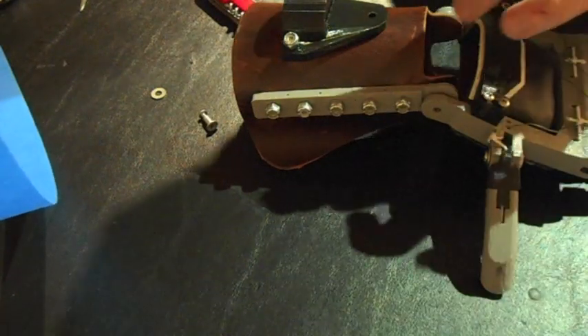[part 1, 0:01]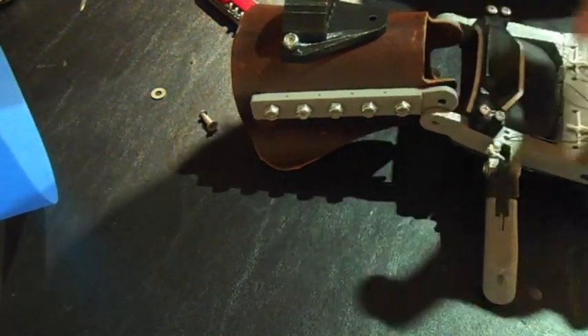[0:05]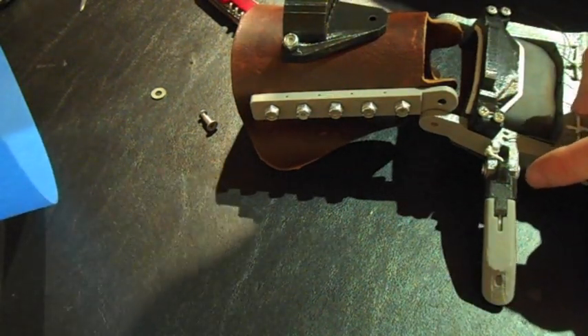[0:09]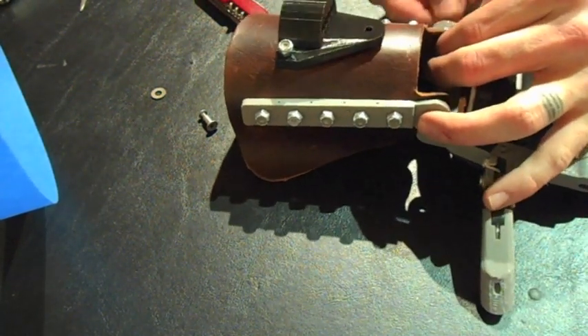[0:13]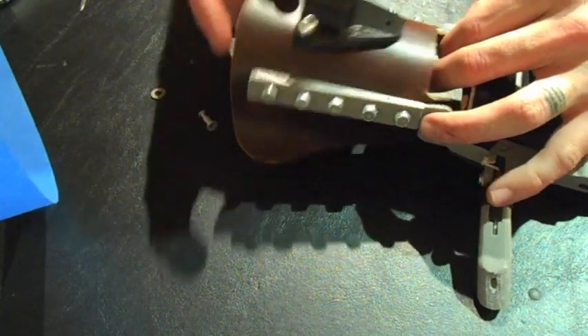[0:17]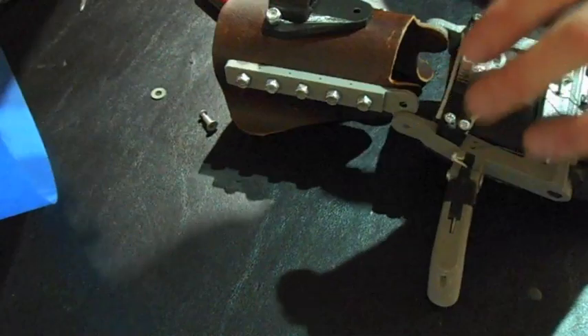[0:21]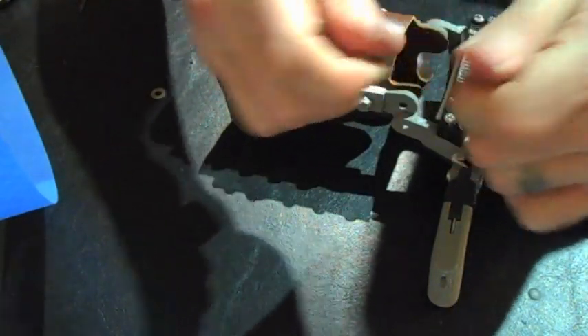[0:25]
So if you're unable to find screws that are long enough, they're just a little shorter, just like I showed you with the thumb, you'll want to use a little bit of removable Loctite. Instead of tightening the hinge all the way down, you'll just put on the Loctite there and then tighten it down to the point where it doesn't cause any impedance in the hinge action. And now we're just going to repeat the same thing with this side.
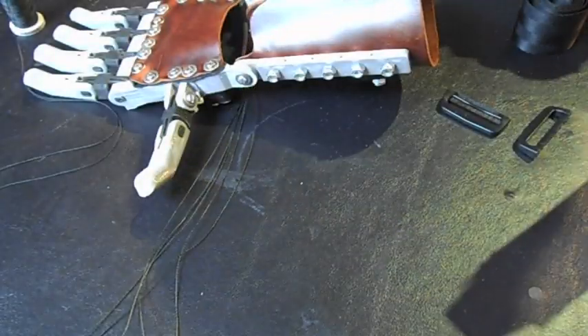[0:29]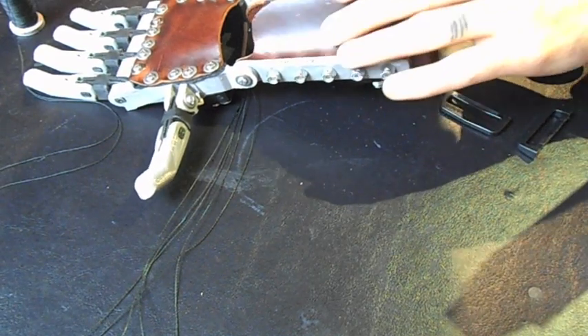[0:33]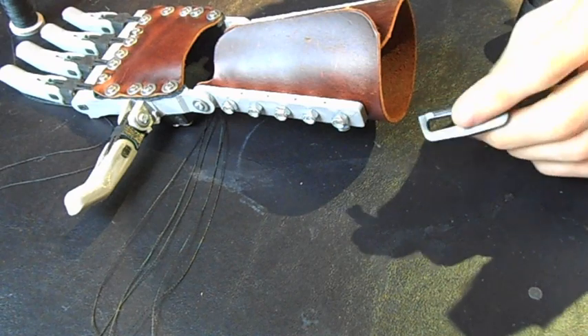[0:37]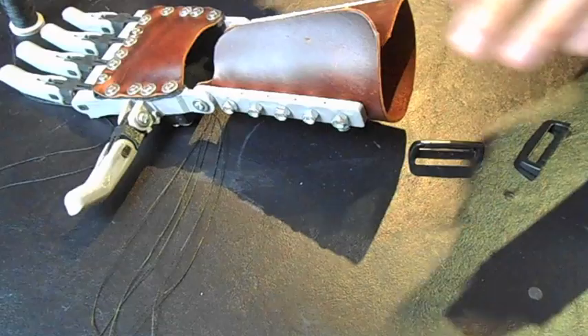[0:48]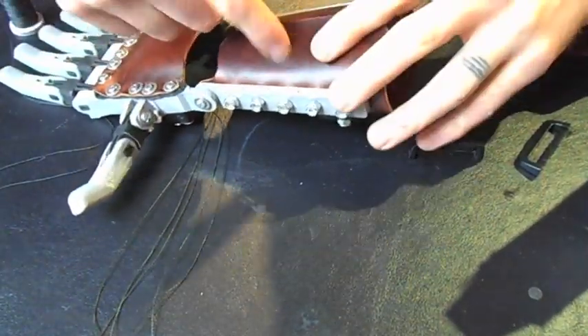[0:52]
Alright, so moving on next to creating the closure system. I have a couple of these plastic brackets. They're used for nylon strapping. So that'll be one side. These are going to be held to the side of the frame with the shorter flap of leather.
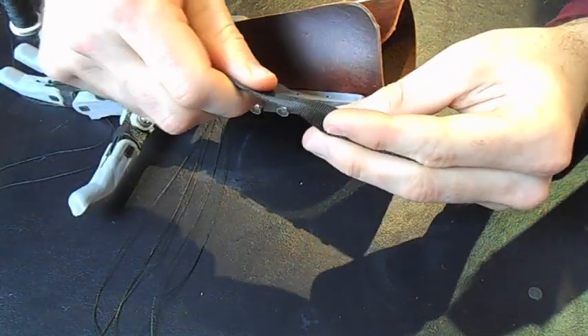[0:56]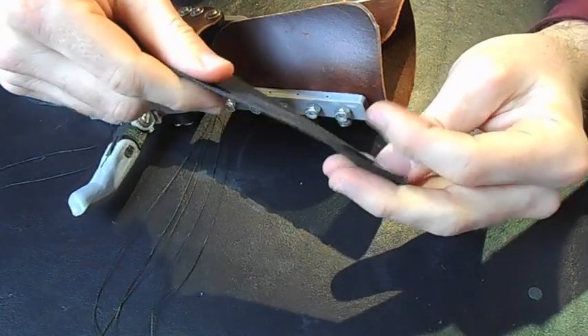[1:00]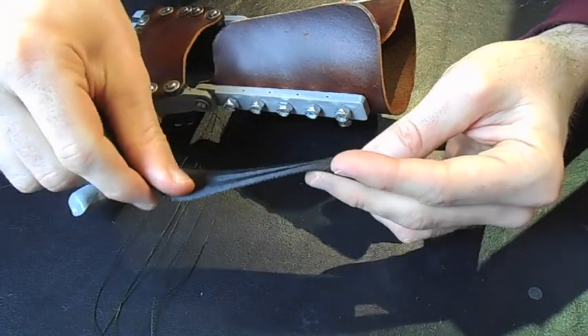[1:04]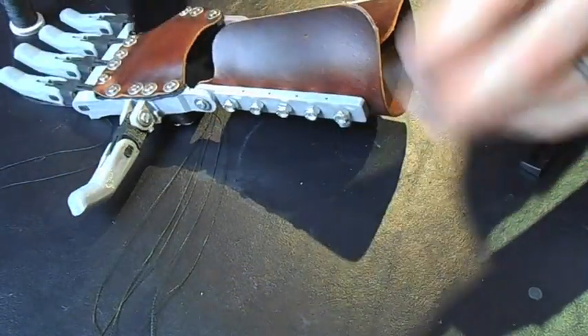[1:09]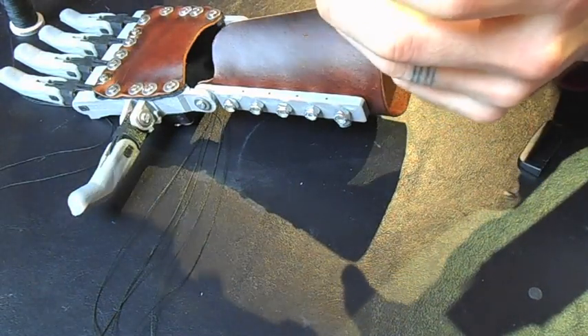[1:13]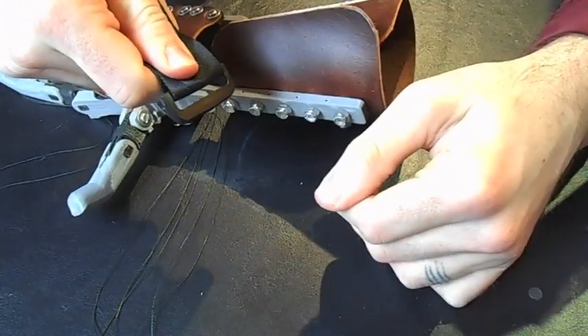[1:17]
They're going to be held there by this material, which is nylon strapping. It's very similar to the material that seatbelts are made out of. I found this at my local hardware store. This could also be found at a fabric store, maybe Joann's or something equivalent to that. And as you can see, that fits through there, and it'll anchor it to this side.
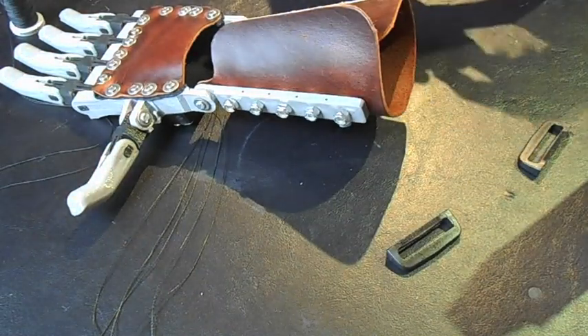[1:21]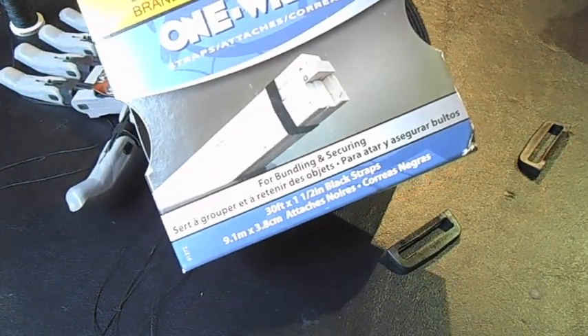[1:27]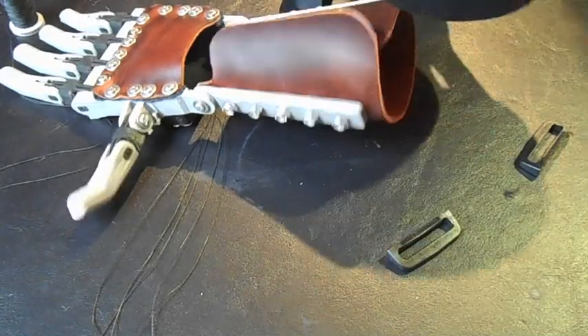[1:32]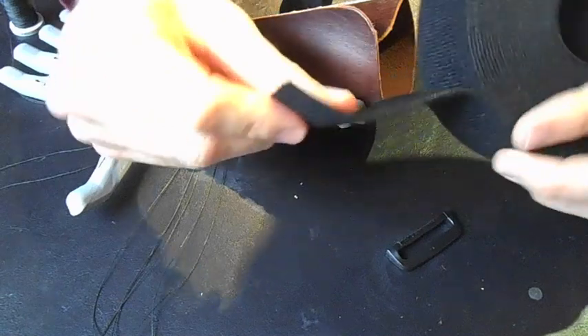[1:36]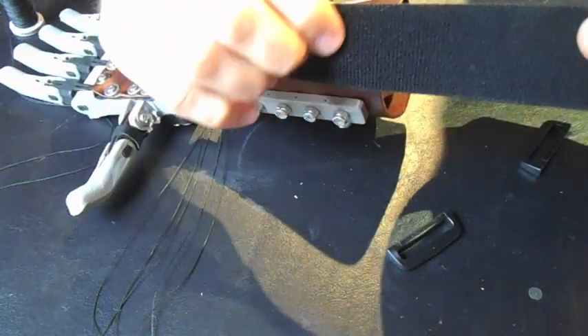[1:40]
Also, for the other side, for the Velcro, I'm going to use this product called One Wrap. I found this at Lowe's. It's a 1.5 inch width, and it's very strong, sturdy Velcro. And what I like about this is that it has the hooks on one side and the loops of the Velcro on the other.
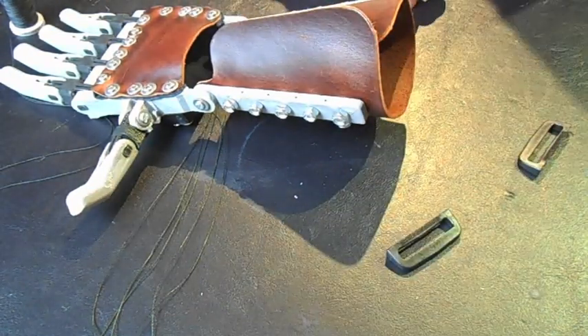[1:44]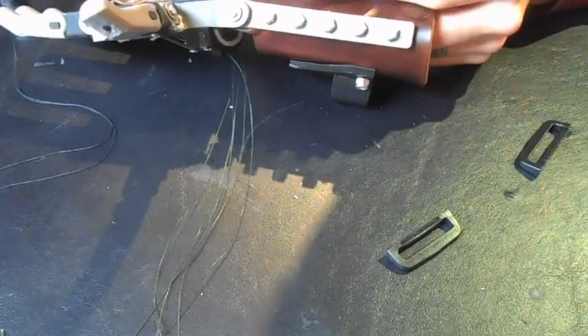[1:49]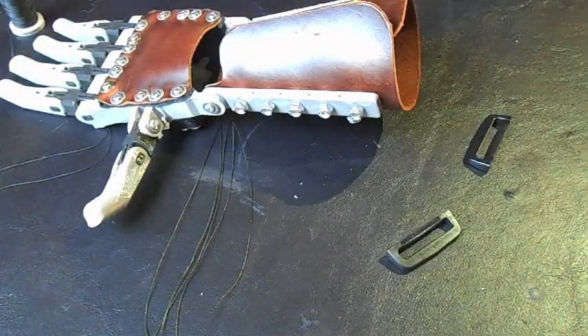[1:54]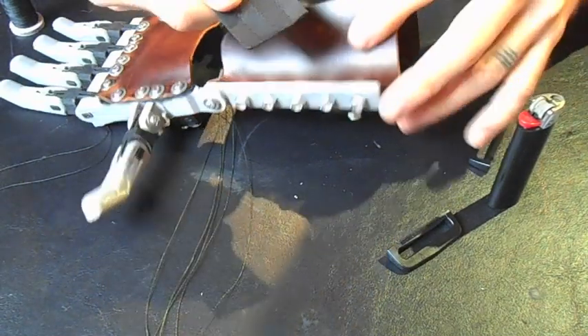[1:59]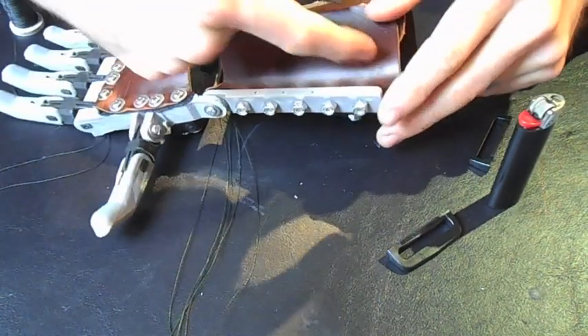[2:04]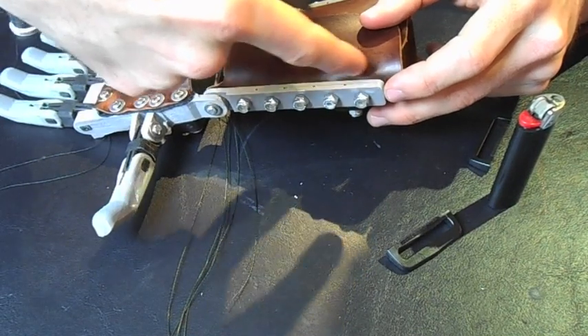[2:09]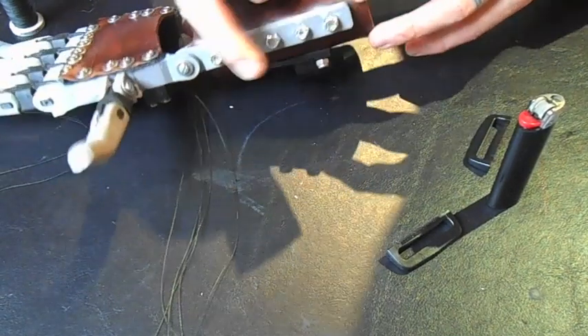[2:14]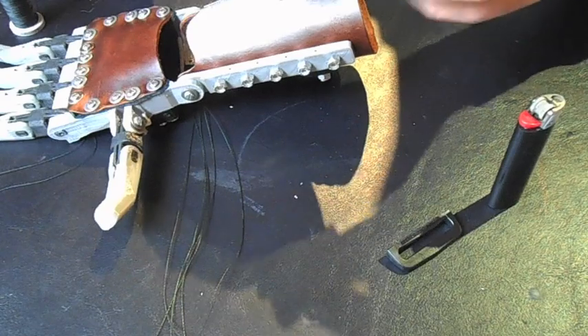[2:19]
So what we're going to do is punch holes in the material, use a lighter to melt those holes and prevent any fraying from occurring, and then anchor the strap in between the forearm bar and the leather. So we're going to punch holes in it to correspond to the bolts. The first thing that we'll want to do is loop this through here
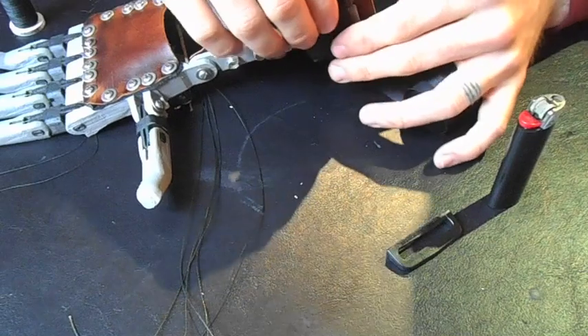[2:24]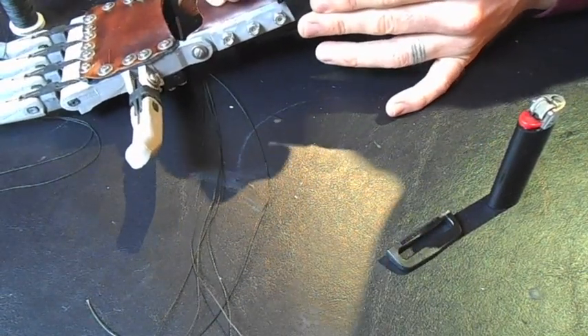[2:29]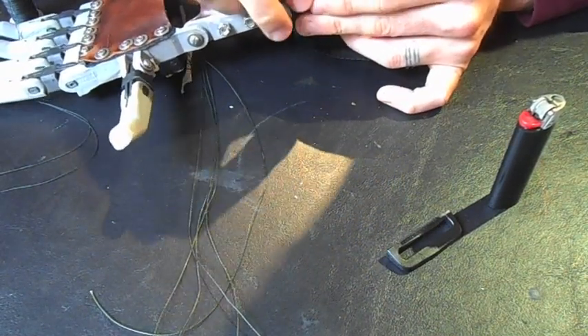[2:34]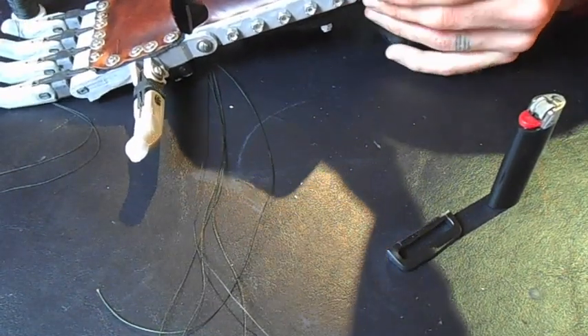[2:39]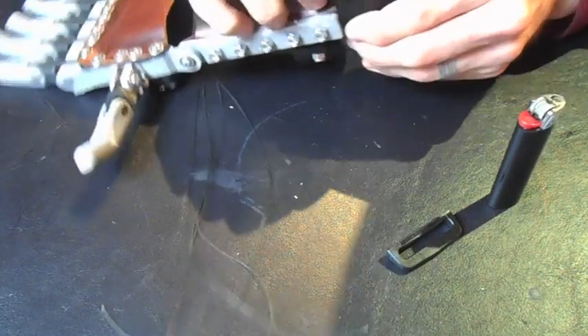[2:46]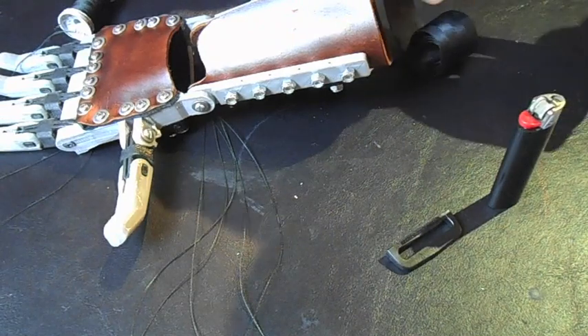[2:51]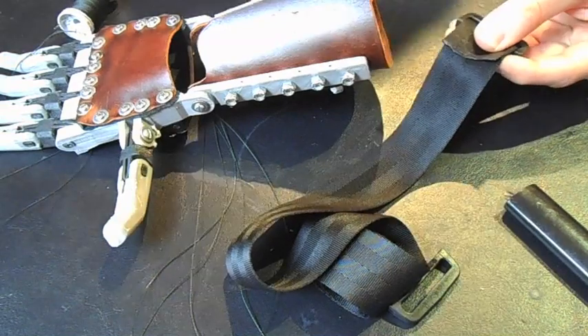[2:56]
And measure this out so that with it through the holes, we want it to hang out so that it can flex back and forth like that, so it's not right up against the frame. I can hold this off to the side to get a better sense of how close to the frame it'll be. Okay, maybe a little tighter there. Alright, so just about like that, and then what I'll do is take a sharp pair of scissors and cut right along there.
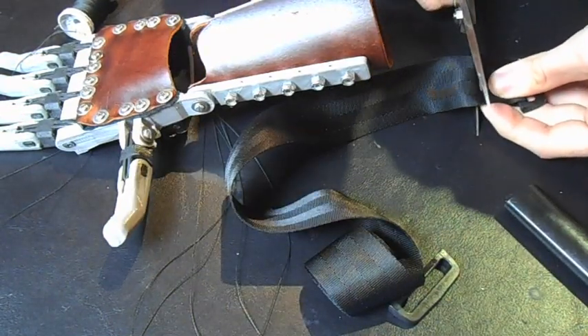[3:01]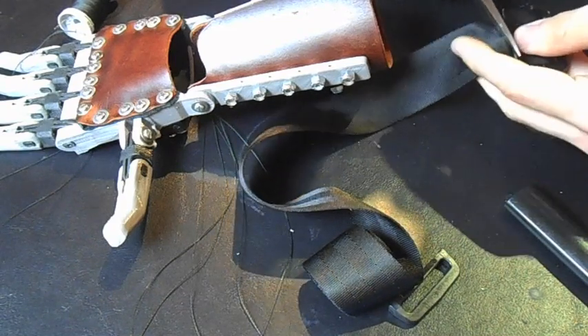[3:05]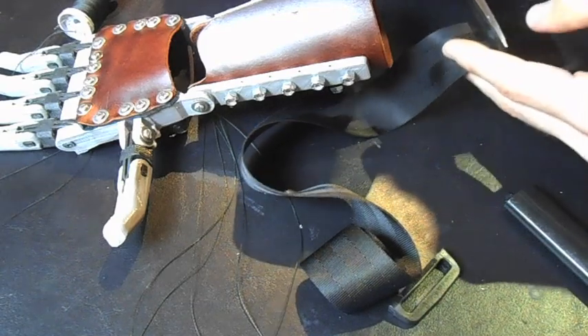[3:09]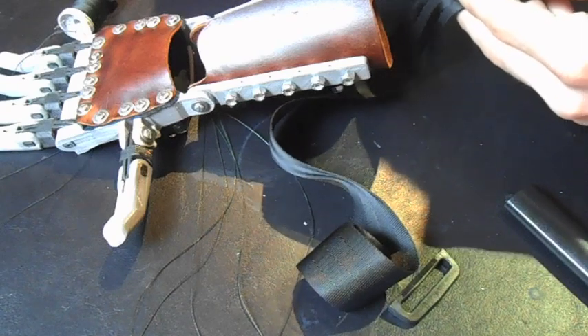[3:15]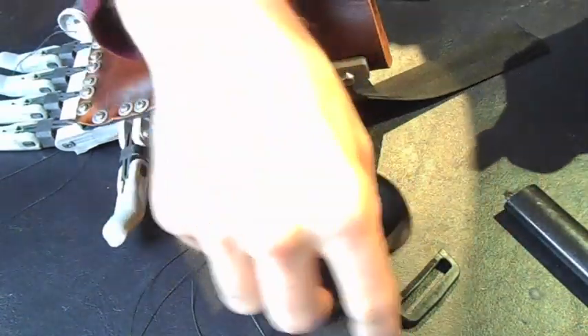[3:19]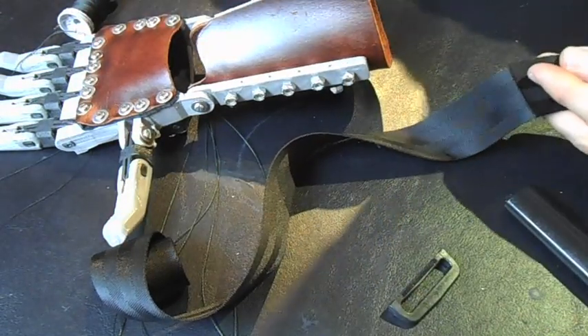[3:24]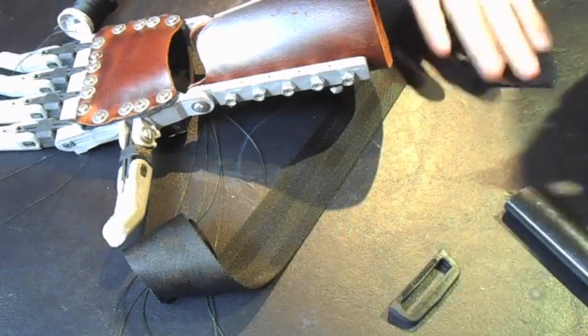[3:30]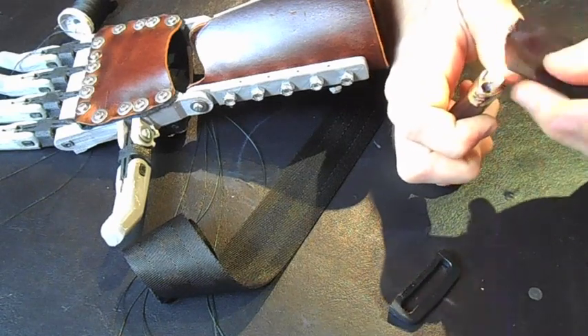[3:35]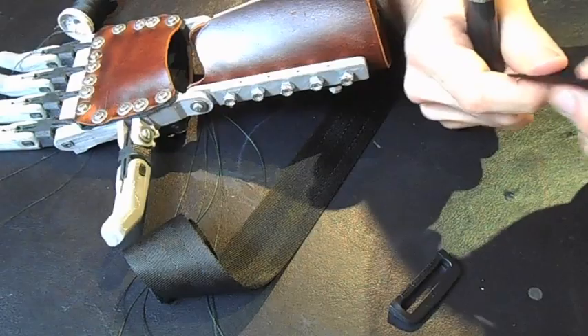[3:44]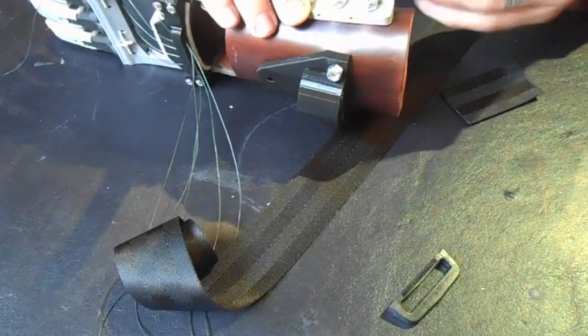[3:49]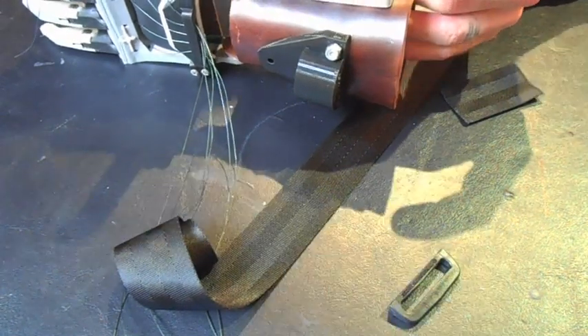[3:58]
So the length for the other bracket is going to be the same, so we can use our first piece to measure out our second one. Okay. Now that we have these cut, take a lighter and singe and melt the ends so that it'll fuse everything together and keep it from fraying. There we go. And then we can measure and punch the holes
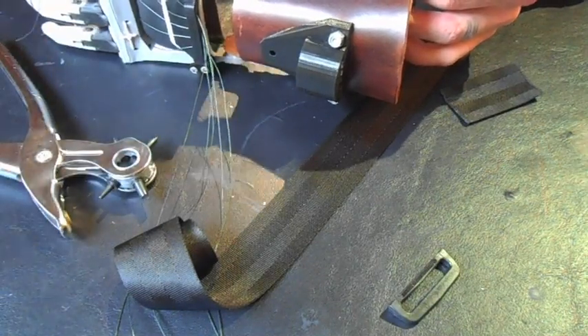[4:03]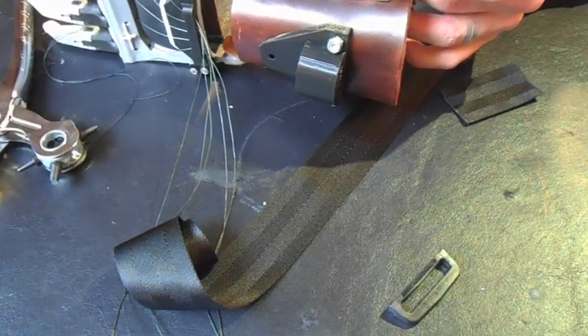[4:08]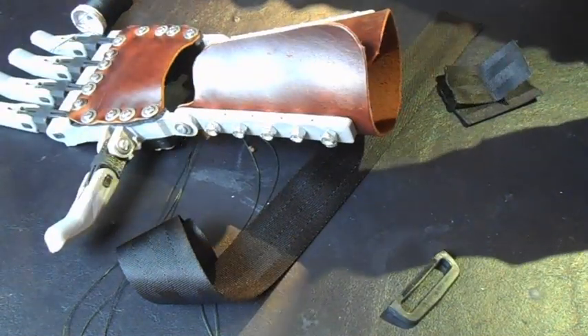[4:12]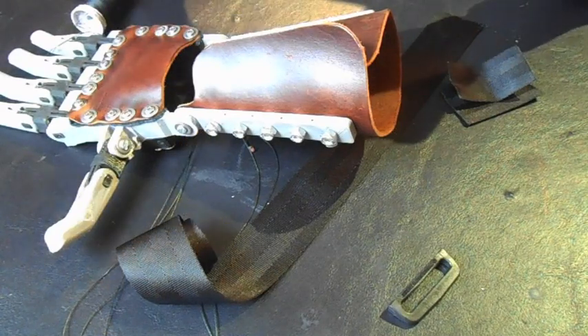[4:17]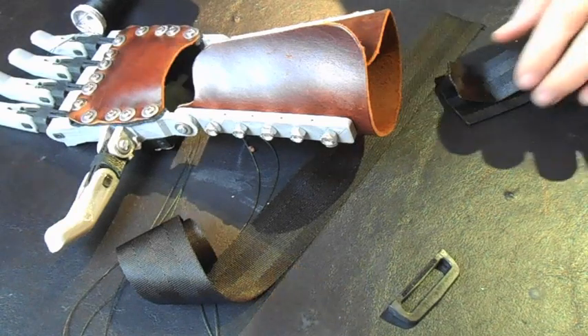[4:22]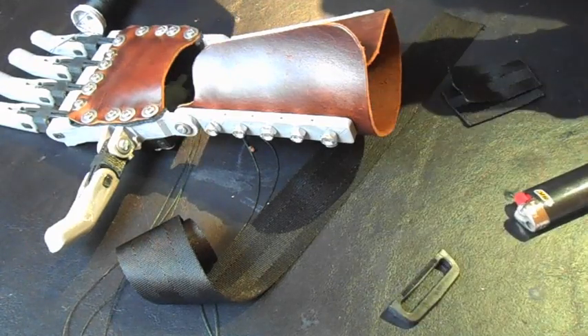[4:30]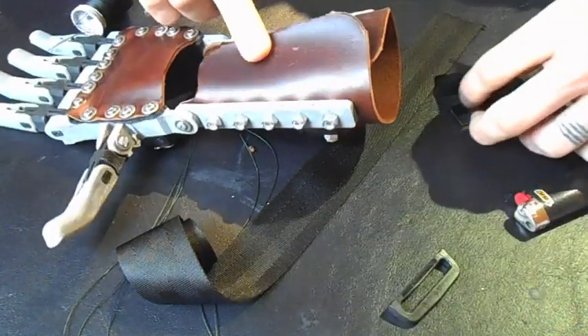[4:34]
for the points at which it's going to mount to the bar. And this is actually going to require the punch that I removed from the rotary punch earlier. So let's push that back in. There we go. Switch to it. Okay. So you want a hole that's a little bit smaller than the size of your bolt, because the hole will expand a little when you melt it, and that also helps to reduce the chance of fraying.
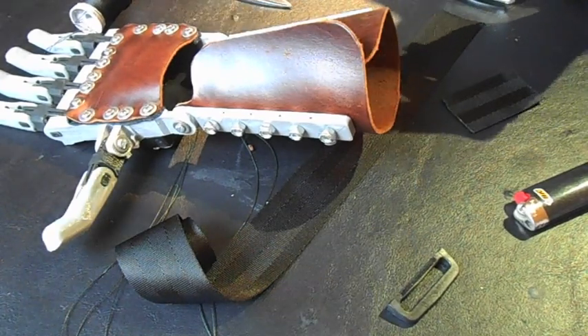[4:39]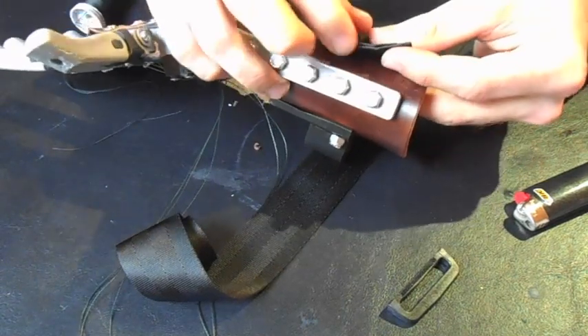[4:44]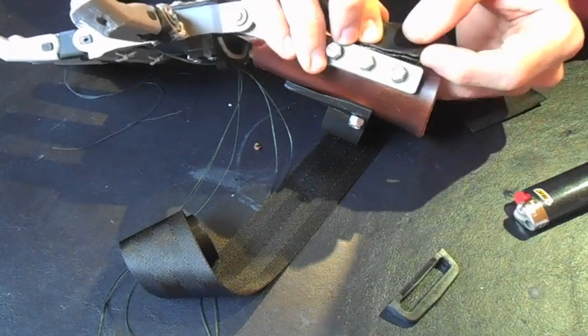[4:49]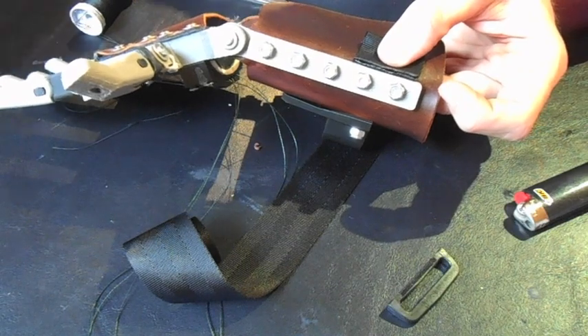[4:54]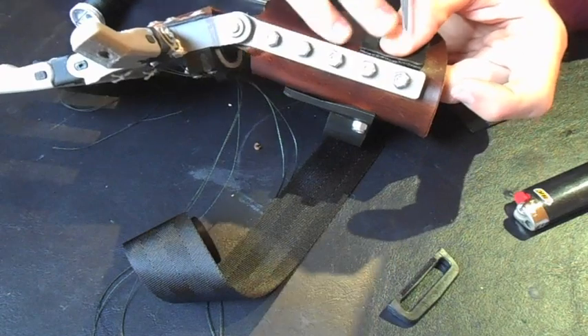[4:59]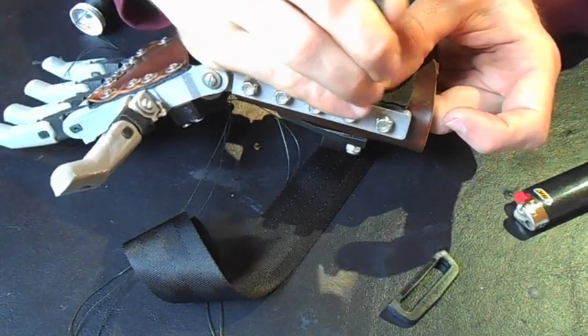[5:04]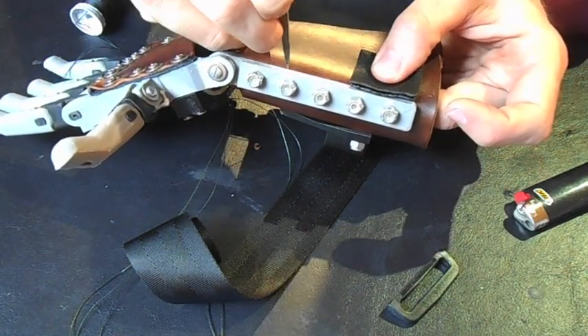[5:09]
Marking these can be a little tricky because Sharpie and other markers don't show up well. If you have a silver colored felt pen, like a fabric pen, that works really well. The other thing that you can do to mark this is just use something sharp to poke a hole in it at the center of where you want it to be. What I'm doing here is lining the holes up with the center points of these bolts. Actually, I'm going to shift this over a little bit because we're going to need these to be slightly off on this one.
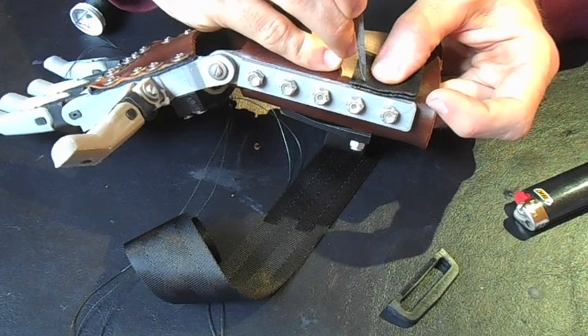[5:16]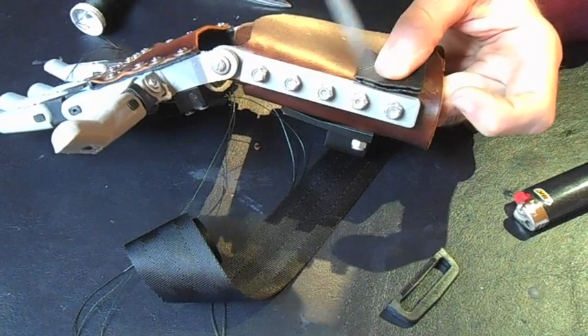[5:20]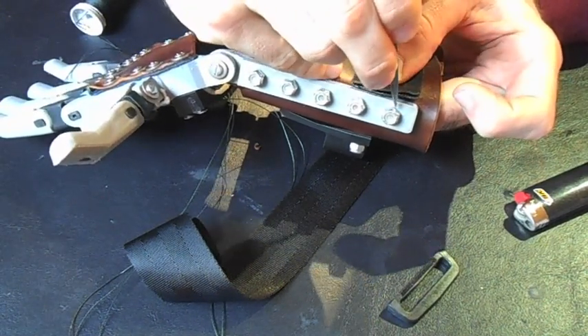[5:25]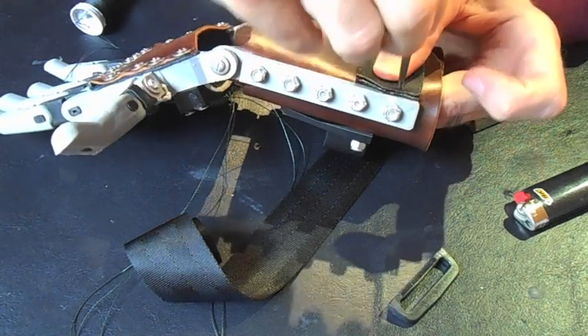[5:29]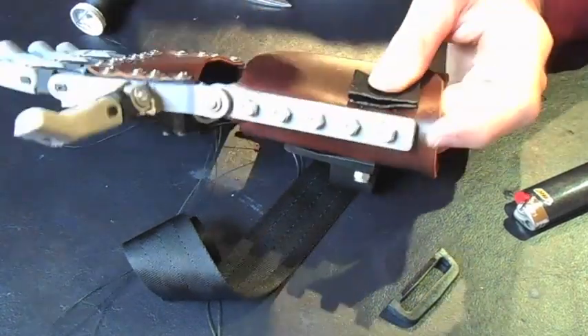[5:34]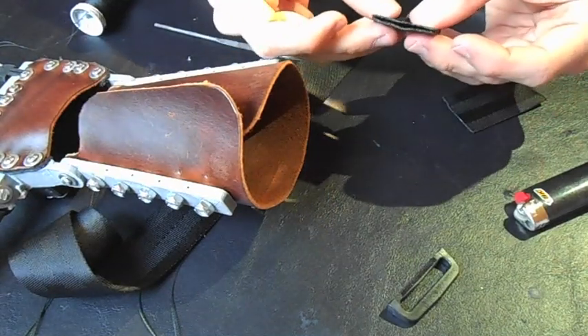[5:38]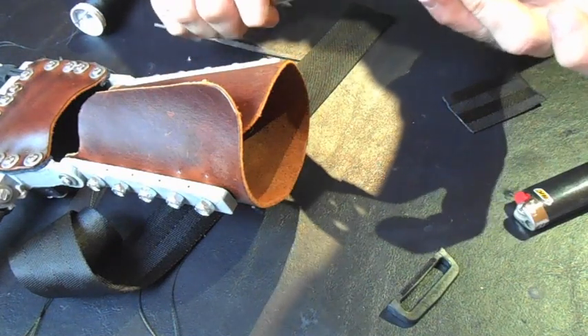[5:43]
Okay, so we're just going to go down to about here, and create a dent in the material. That one. Okay, so I don't know if you can see it on the camera there, but there's 2 dents in it now. And that's what I'll use. I'll just keep it folded in half, that way I end up with holes that are lined up with each other perfectly.
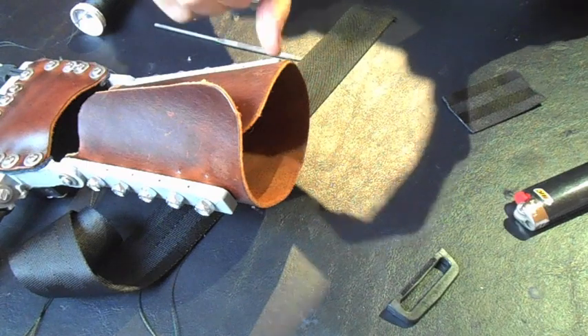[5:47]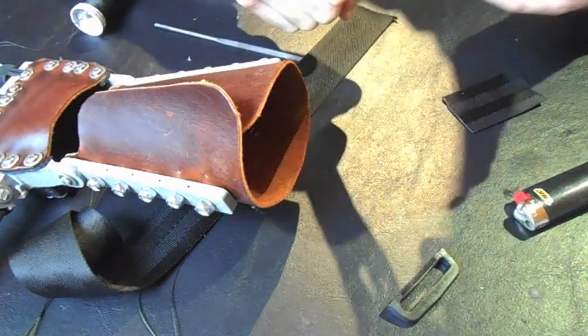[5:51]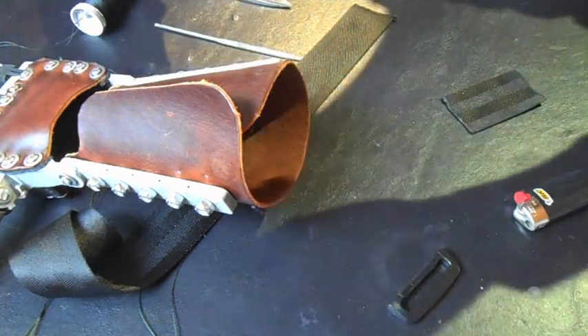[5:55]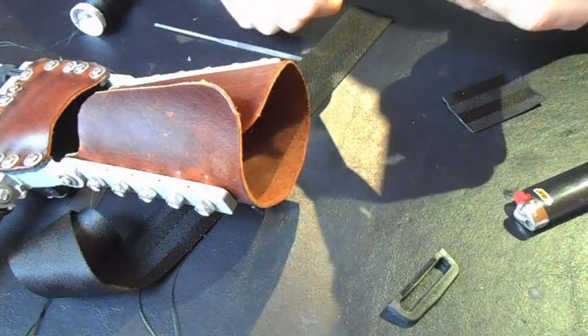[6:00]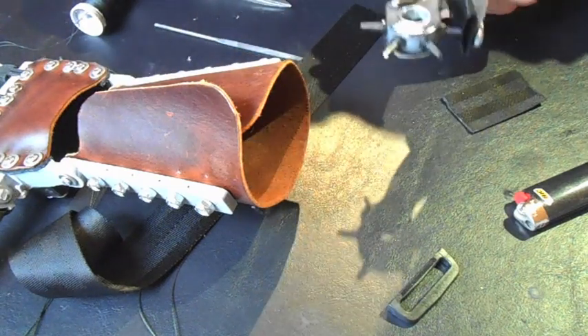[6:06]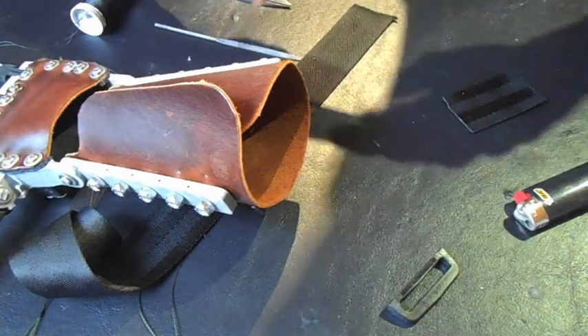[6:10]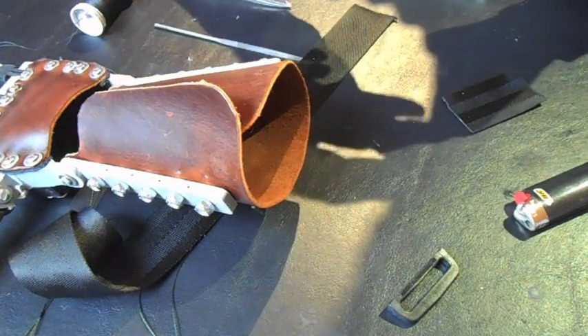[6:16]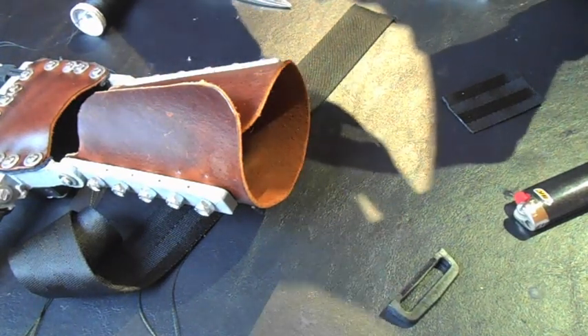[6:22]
And a really firm squeeze until you hear a snap, and then a twist to cut the fibers as well. Okay. Same thing on this side. Really firm squeeze until you hear that snap sound, and then give it a twist, which will cut the fibers. Okay. Alright, so we've got our holes through there. Now this is where we can clean them up with the lighter. Sorry, we want to melt. We want to prevent fraying.
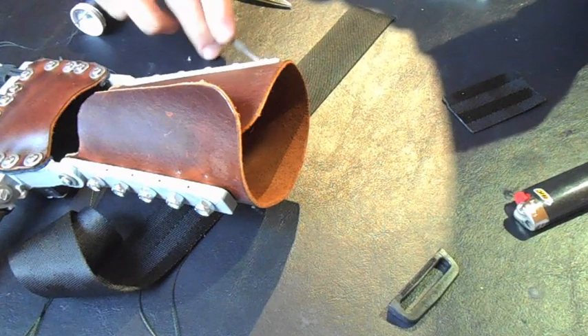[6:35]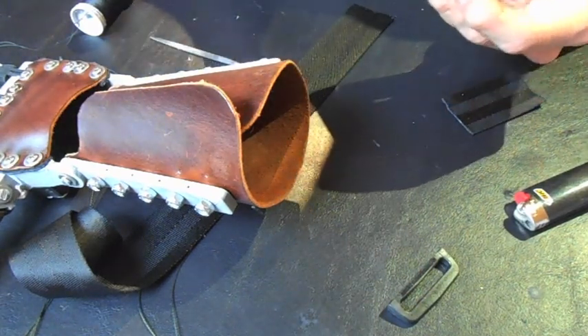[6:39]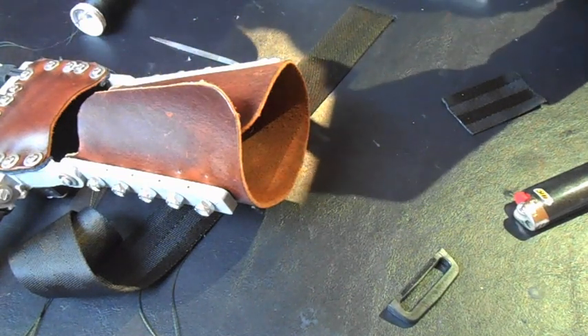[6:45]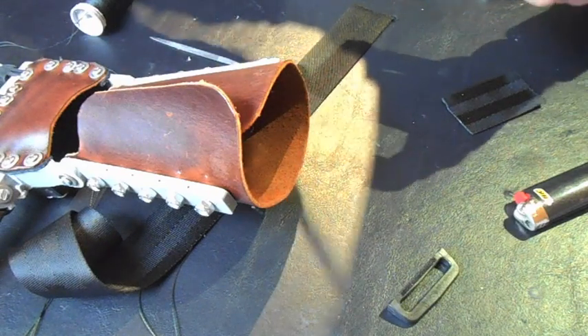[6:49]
Okay. As you can see, my punch is not as sharp as it was when I first purchased it, so I'm going to have to go back through here with some scissors and cut the excess. Okay. There we go.
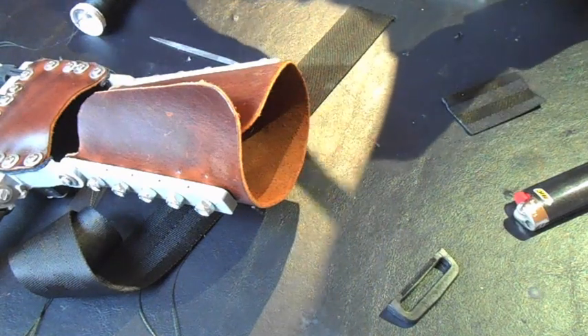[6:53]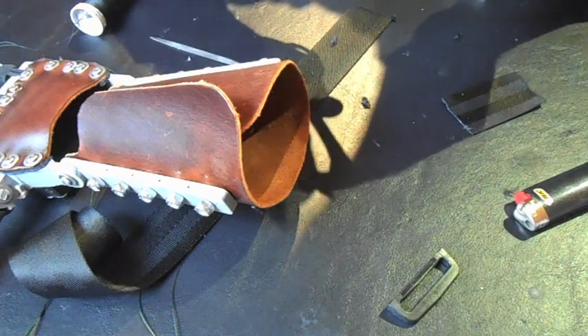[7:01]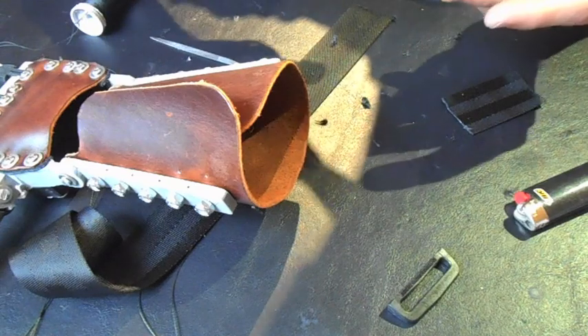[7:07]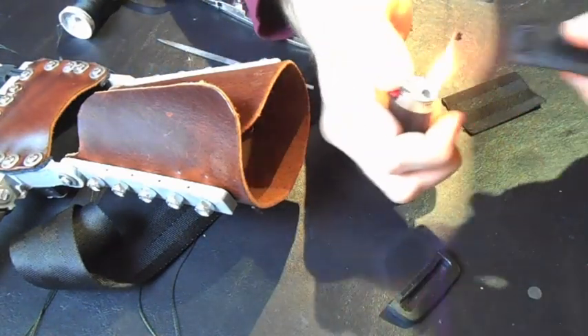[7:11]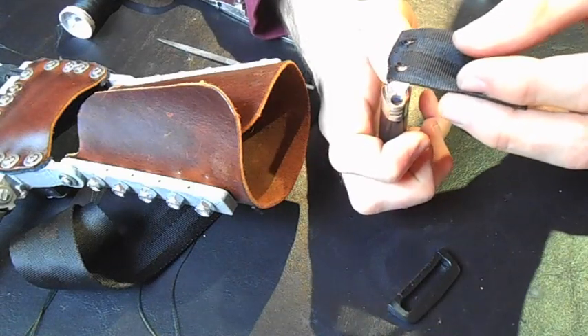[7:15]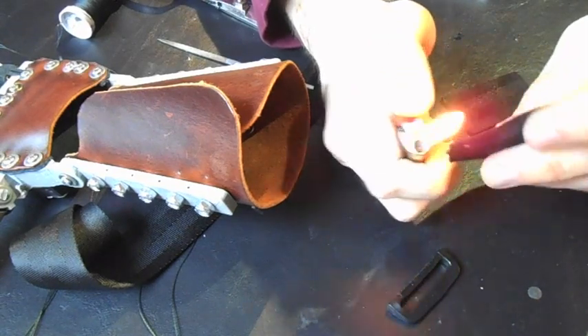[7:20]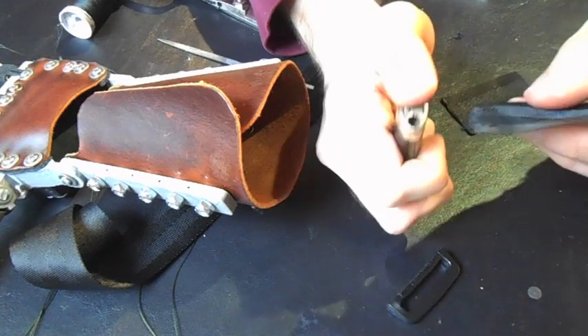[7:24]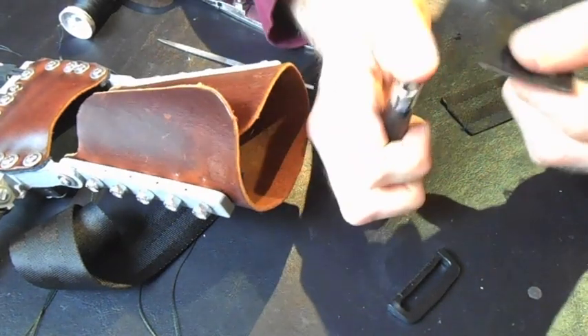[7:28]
So the little flaps that are sticking up from where it punched through but didn't cut completely. Alright, and so when melting the holes, you just want to have the tip of your flame basically go through. There we go. And you just hit it with the flame briefly from both sides. That way the heat's passing up through the center of the hole and fusing together all the fibers inside the hole.
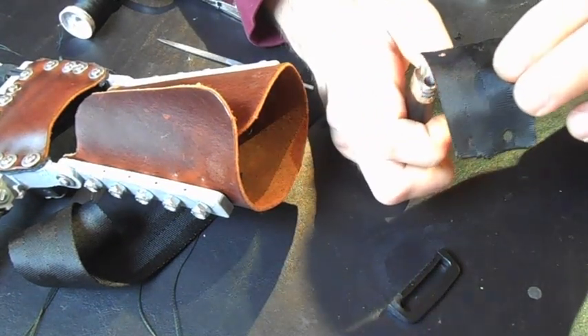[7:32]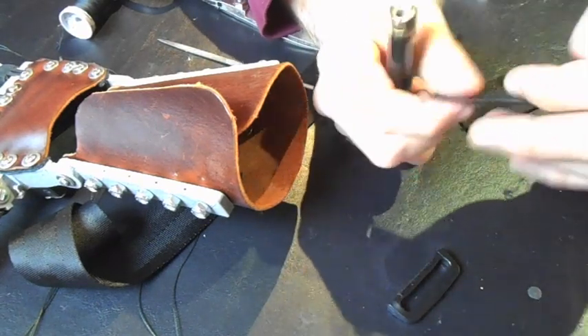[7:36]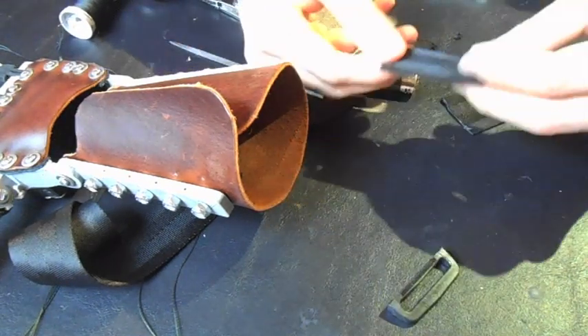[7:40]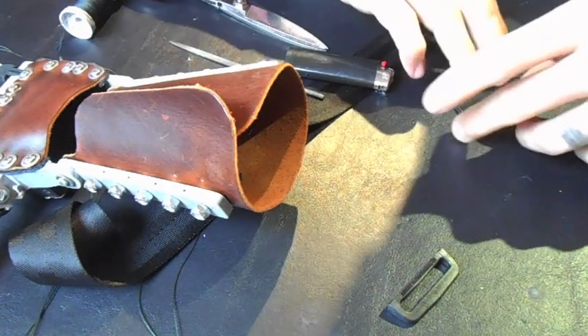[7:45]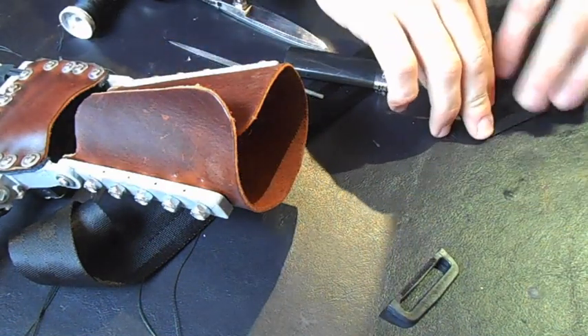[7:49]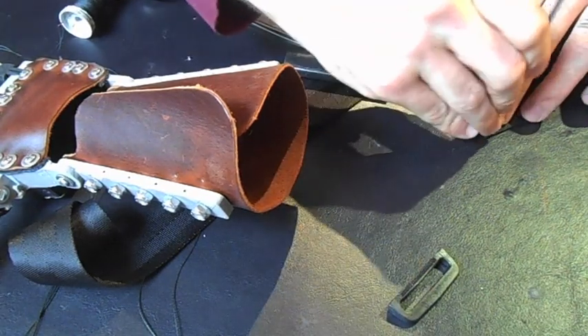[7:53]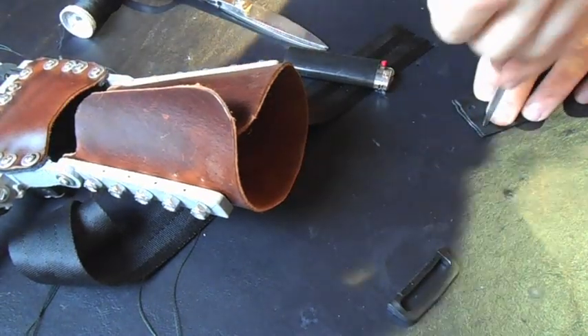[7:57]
There we go. Got my thumb a little bit there. Alright. There. So now we've got our holes cleaned up. And then what you can do is you can just take and mirror those holes onto the next piece of material. And I'll do the same sort of deal here with...
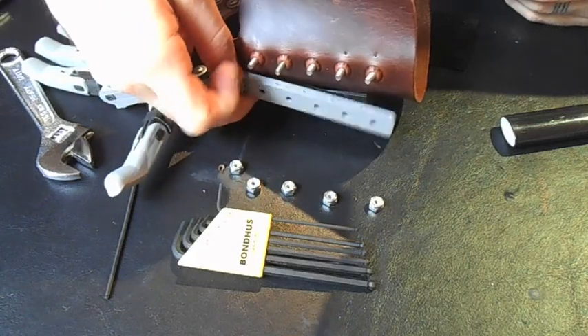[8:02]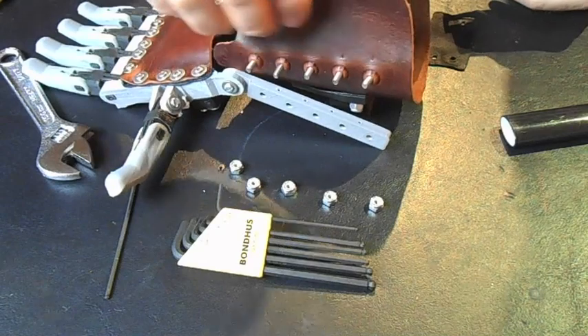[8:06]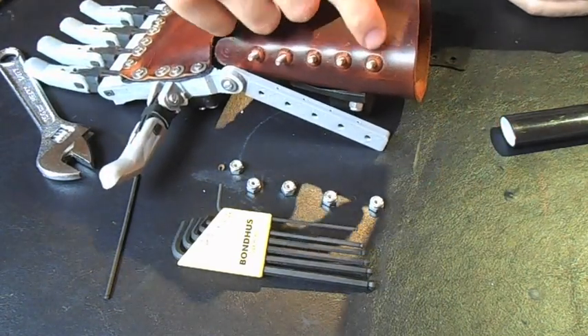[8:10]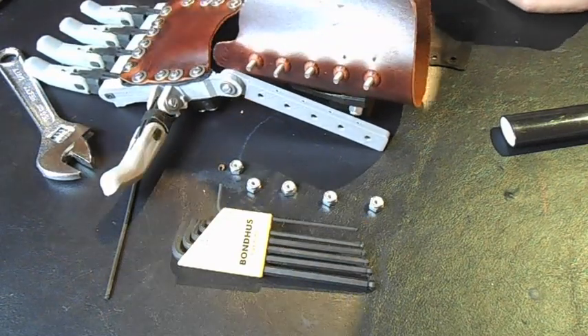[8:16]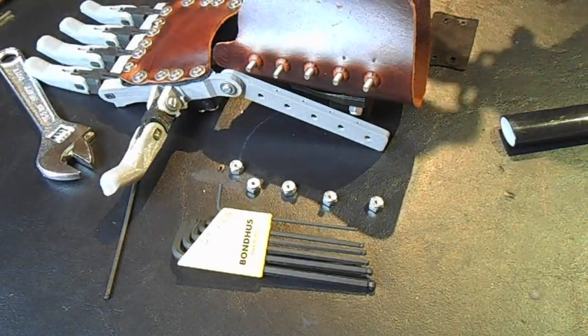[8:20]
Okay, so now I've removed the lock nuts and detached this side of the forearm. You can see that, looking here, you can see how the leather's been pulled up into the wells of the forearm bar, so this is a really good example of how that works out.
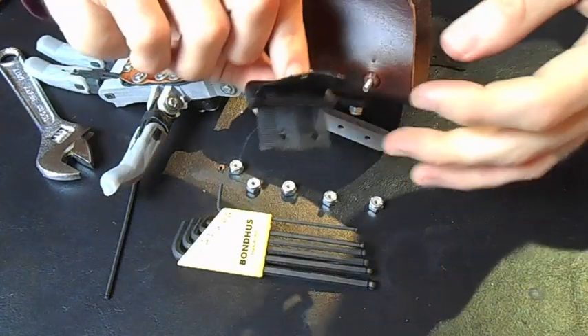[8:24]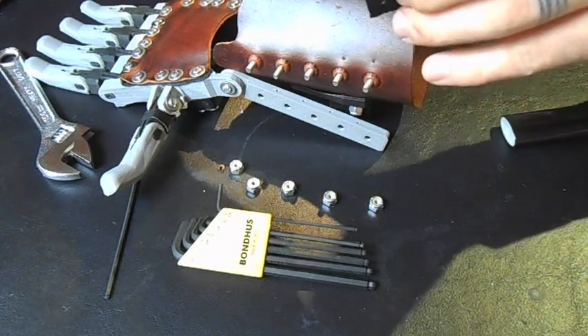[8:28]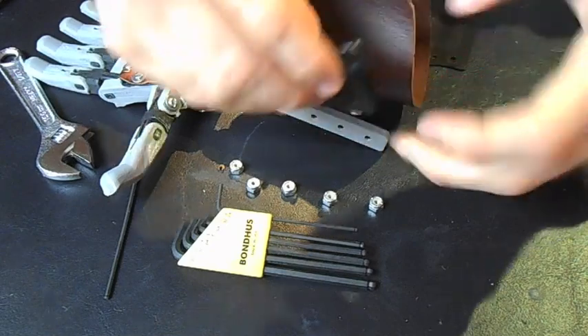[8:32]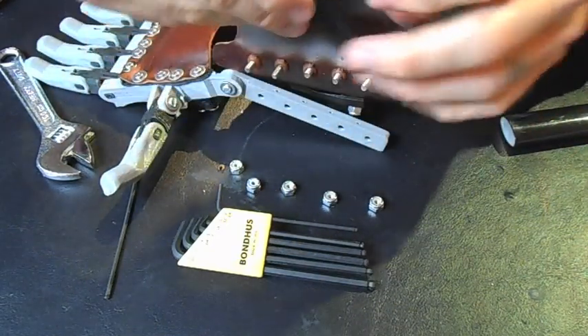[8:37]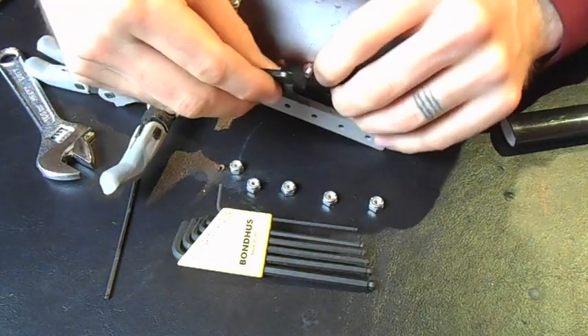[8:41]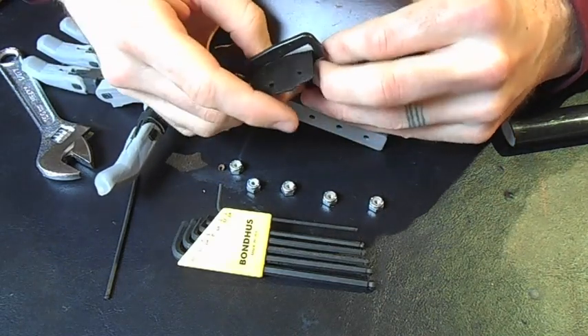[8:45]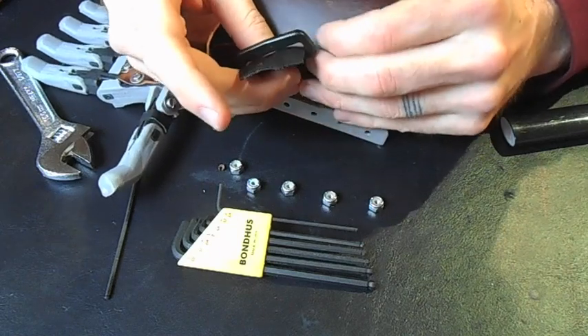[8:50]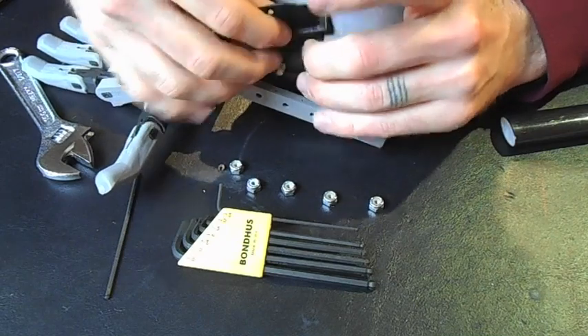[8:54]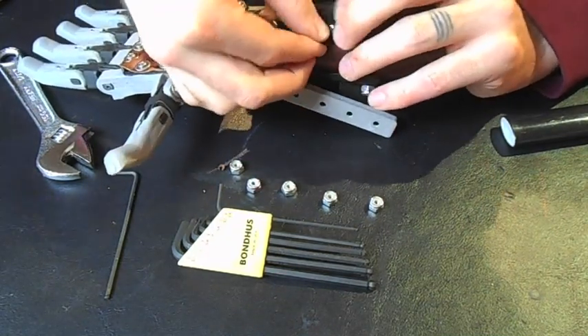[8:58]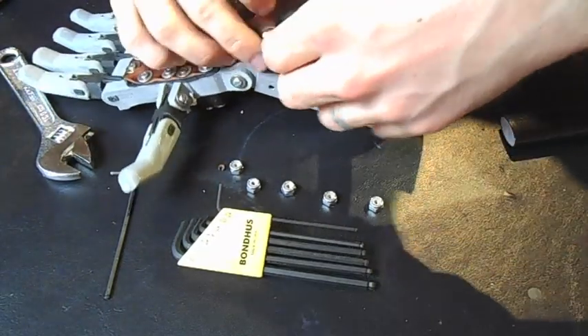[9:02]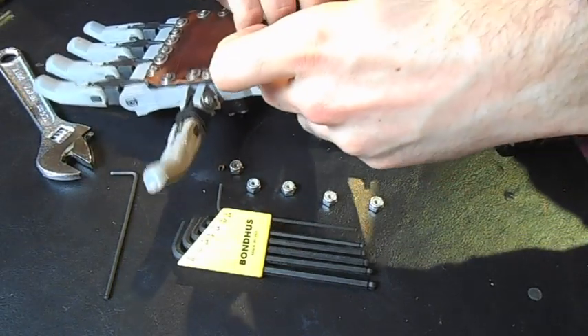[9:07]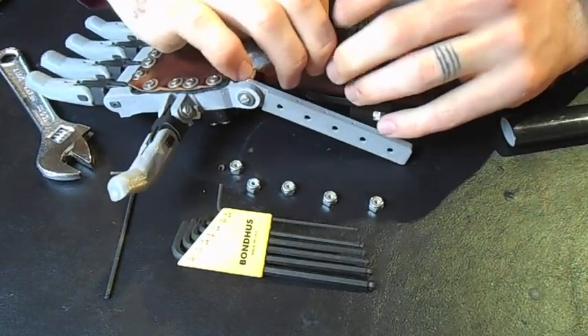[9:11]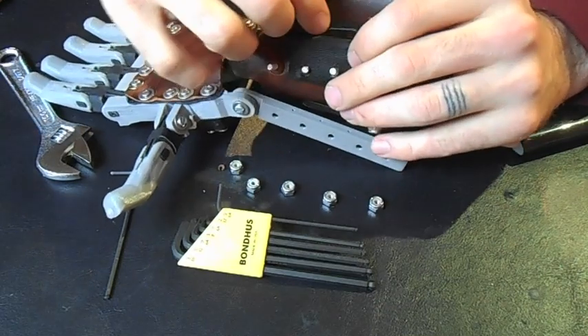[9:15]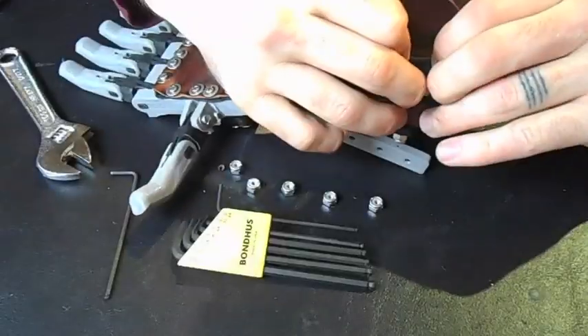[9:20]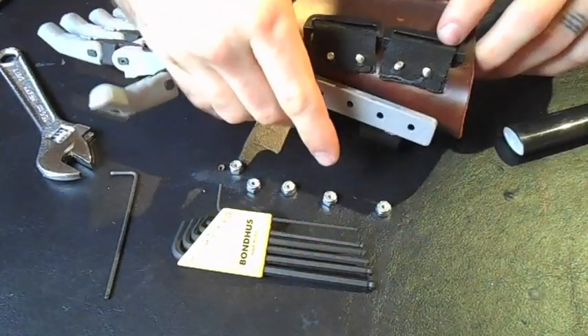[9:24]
And so now what I'm going to do is I'll take and put the material through one of these brackets, and then put it over. Let's see, we're going to actually do this side first. And guide it over the holes. There we go. And double it over, put the top side on too. Okay. So we've got that generally started.
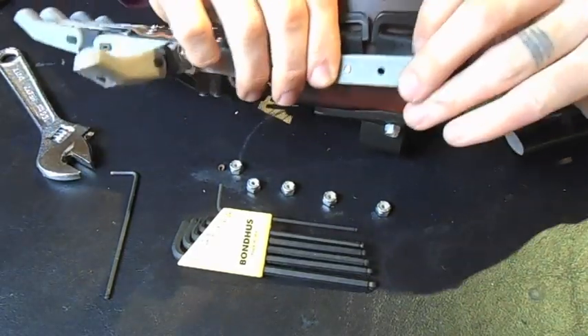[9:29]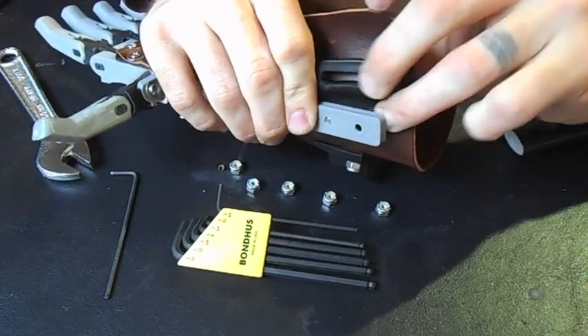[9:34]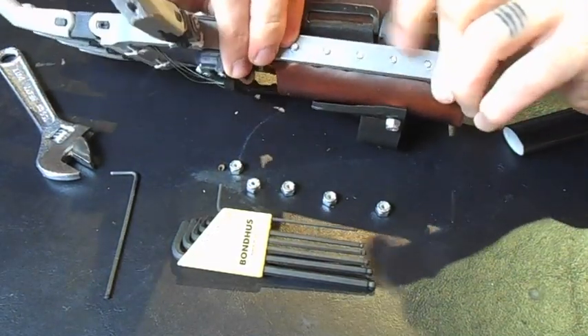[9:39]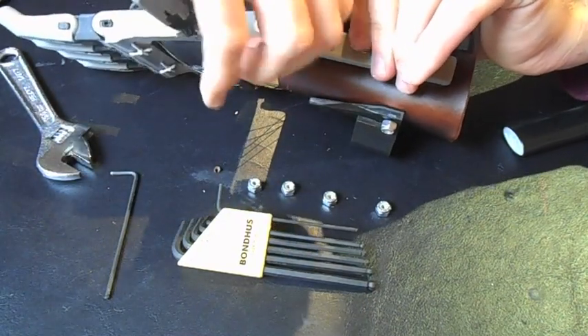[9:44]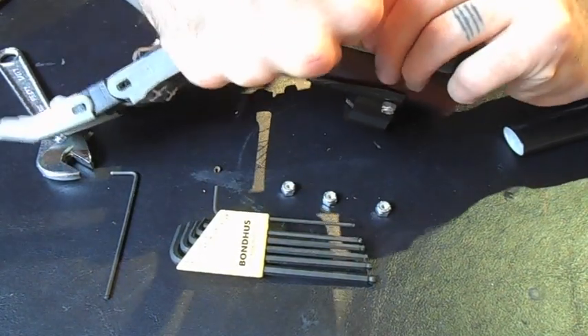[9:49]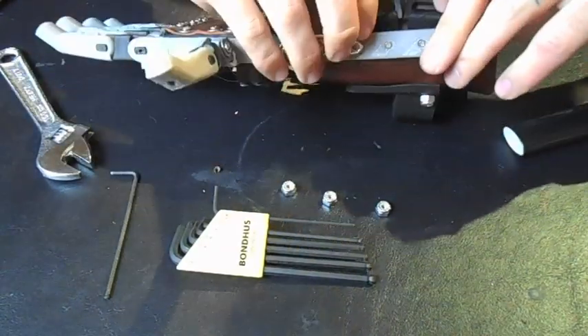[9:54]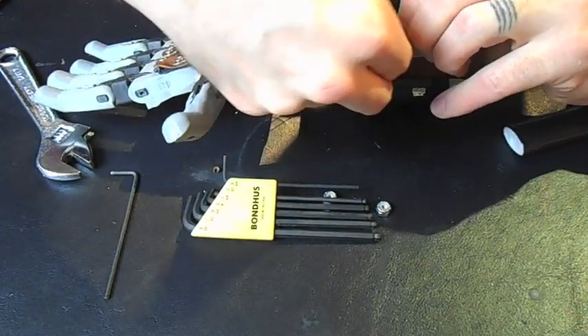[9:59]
Now we can guide the bolts back through. And the next step will be to start from one end and thread the lock nuts back on. And you might take some pressure with these ones because we've added extra material in between now. So you just have to push really hard with your thumb from the other side and get the thread to bite.
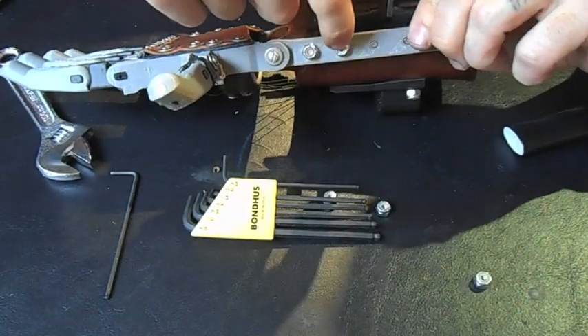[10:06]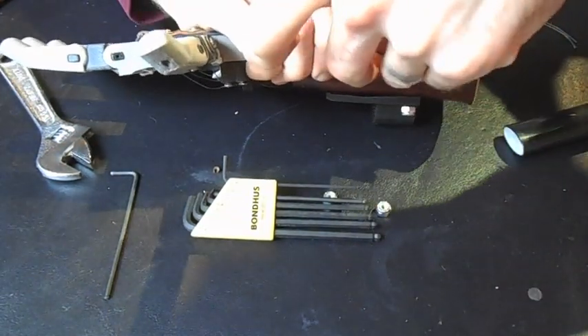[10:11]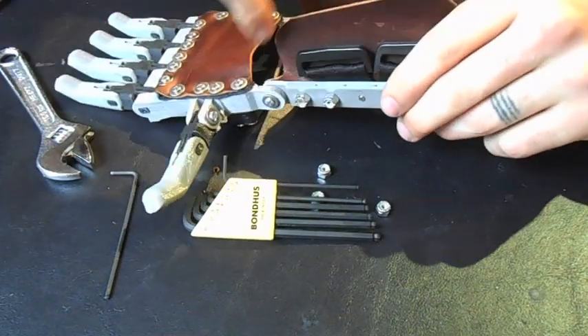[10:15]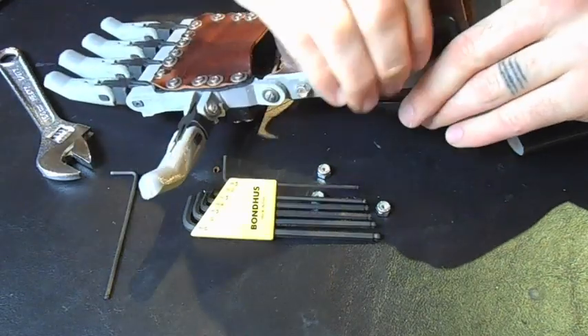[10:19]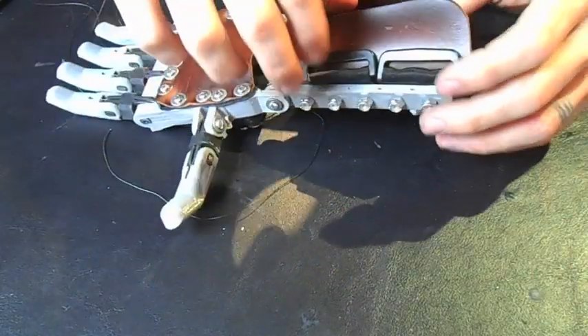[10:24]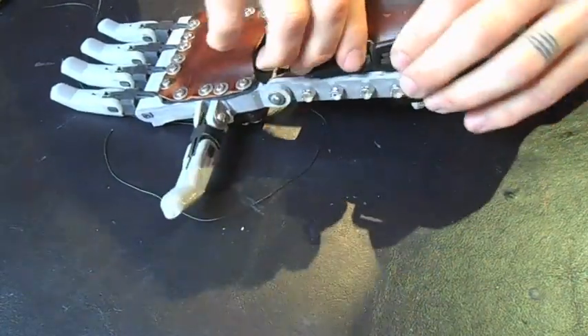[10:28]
And that's where actually if we tighten down this one, it'll help to force that one up. And so on. So you'll just want to tighten for this end and go that way. And it'll cinch it all back down. Okay, so now this is back on, and we have our brackets anchored.
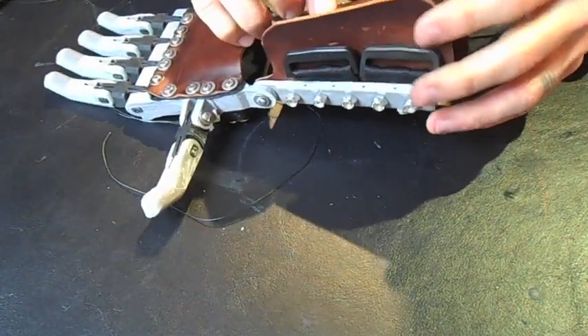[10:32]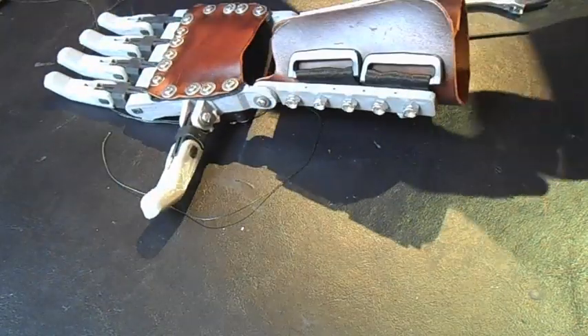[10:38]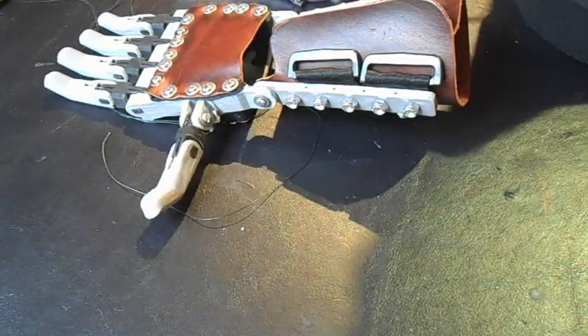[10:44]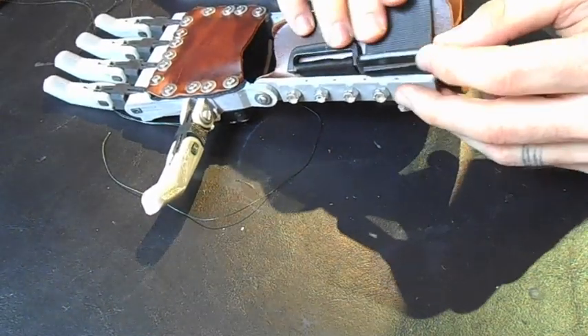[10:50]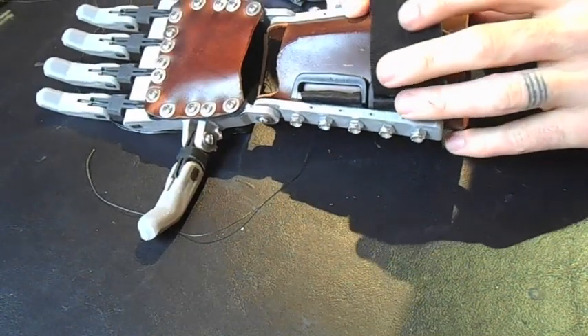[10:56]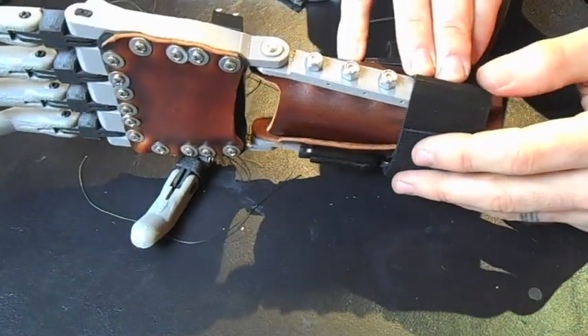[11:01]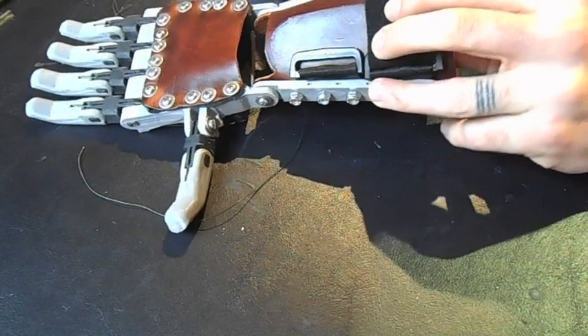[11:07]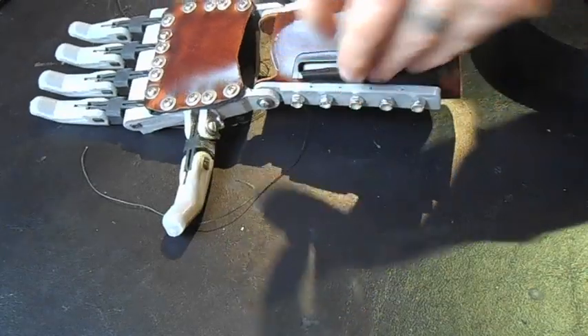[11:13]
So the next thing that we're going to do is we're going to put the long flap underneath, fold this flap over, and get a piece of our Velcro going here. We want to measure this out so that it has enough length to come over and secure to itself. So kind of like that. And then also to go back and fit underneath this arm bar. And you're gonna have a different length on the back of the arm as opposed to on the front, because this tapers as we go.
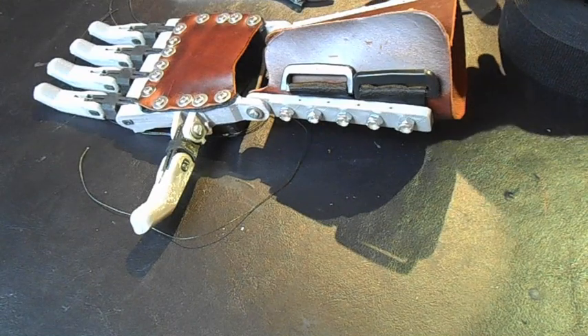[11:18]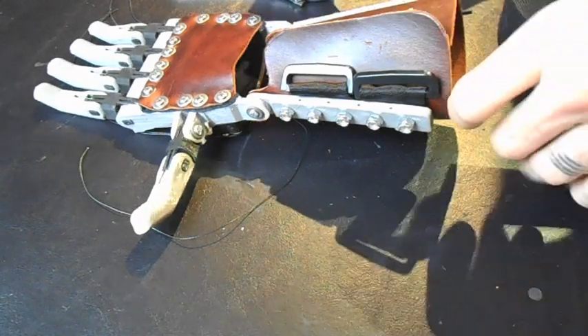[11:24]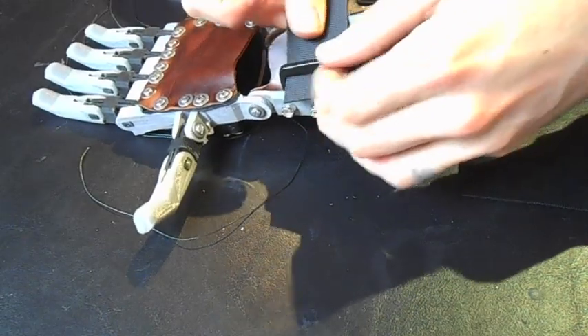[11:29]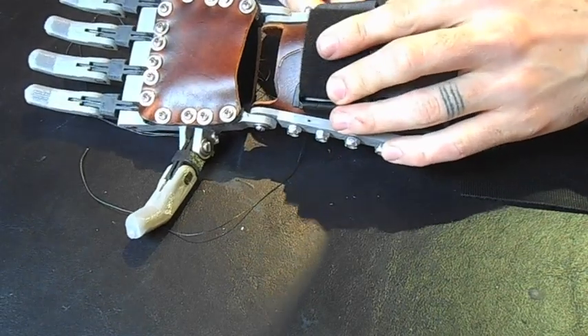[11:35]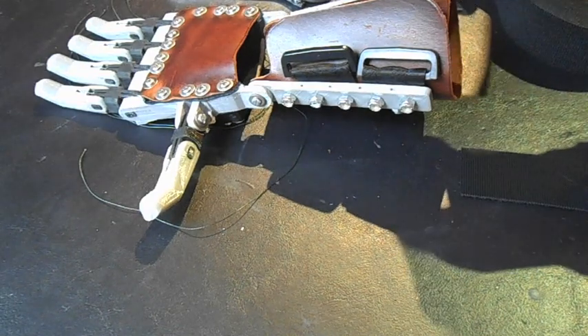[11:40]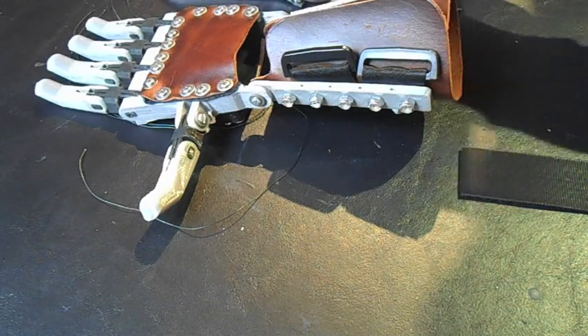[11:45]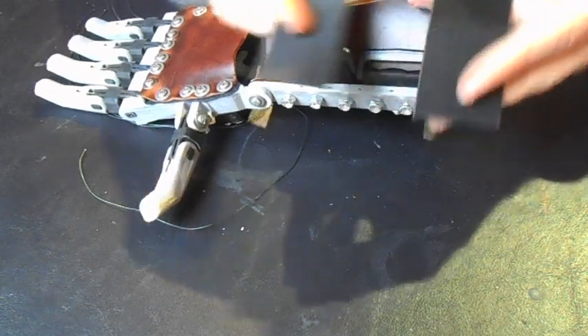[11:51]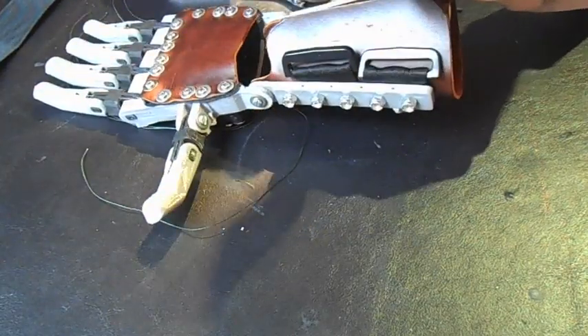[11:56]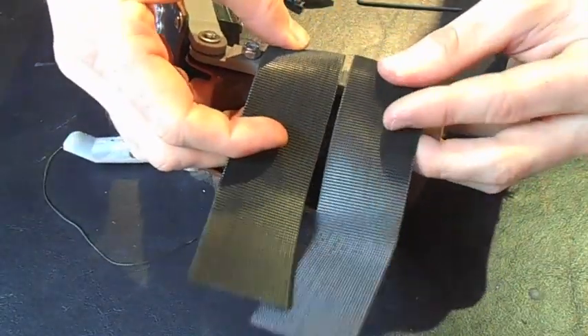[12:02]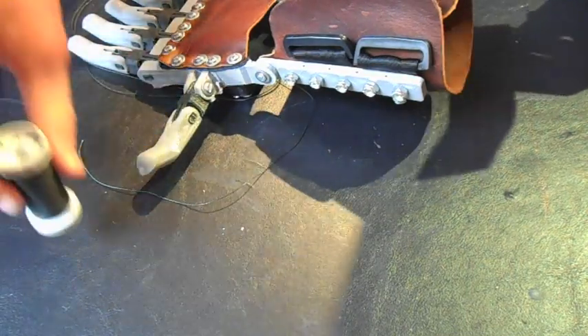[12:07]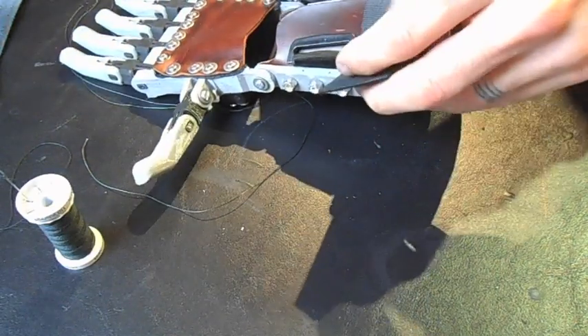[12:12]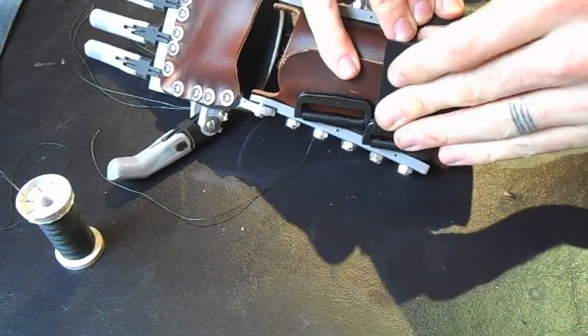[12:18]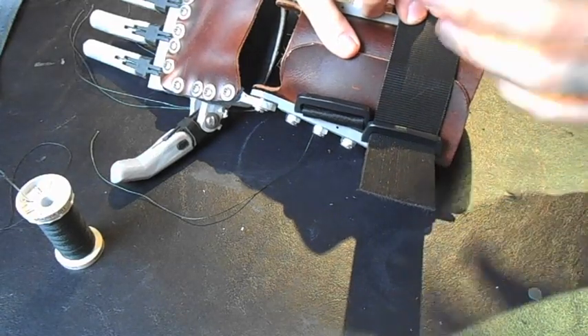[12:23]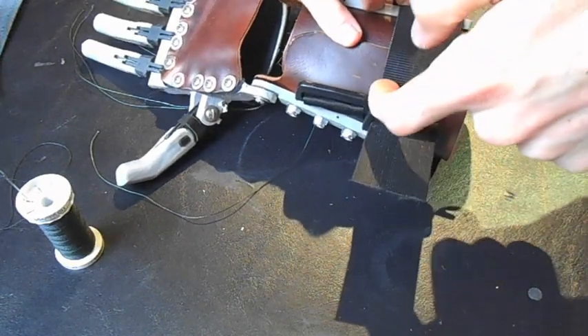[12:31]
So I'll measure this first piece. Okay. Measure the next piece. So as you can see, there's a little bit of a difference there between these two. So just like we did on this side, we'll punch holes in this to allow it to be mounted to the forearm. And then also we're going to use needle and thread because we need to sew another piece of Velcro onto this. So we'll have this through here. This is going to come and it needs to be able to attach to itself. So we'll need a patch of Velcro with the soft side up that goes from about where it's going to stick out of the forearm bar to about midway here to provide a surface to stick to.
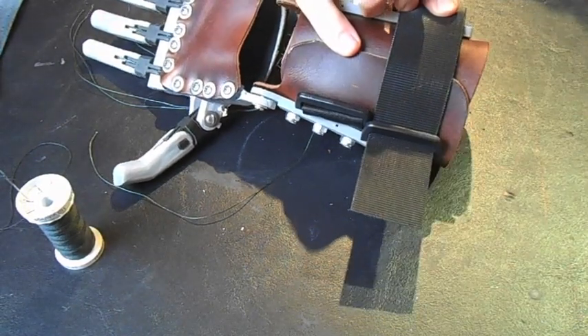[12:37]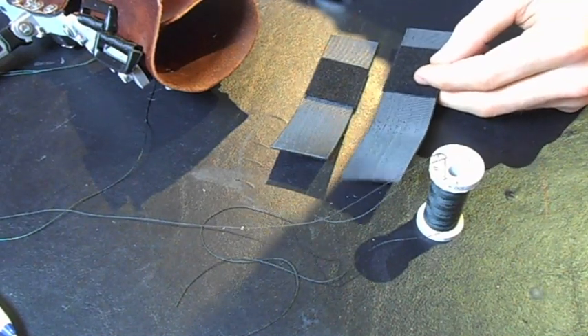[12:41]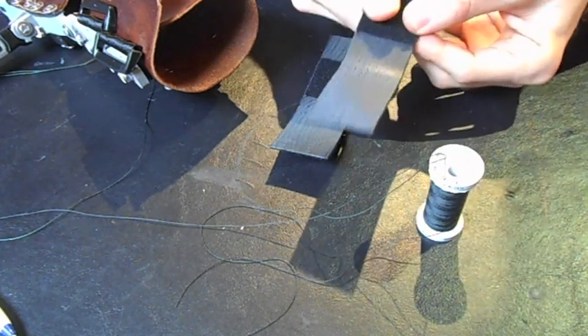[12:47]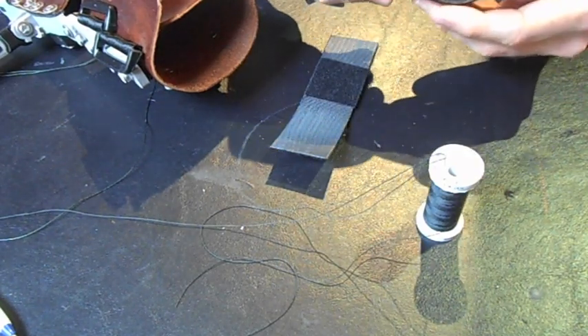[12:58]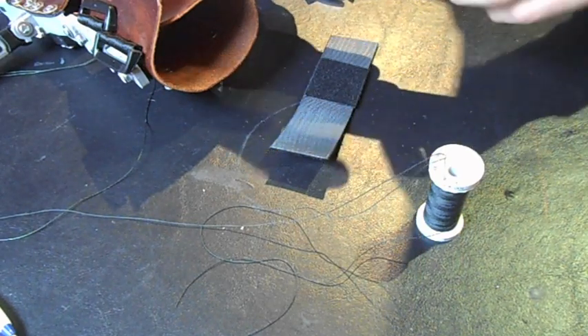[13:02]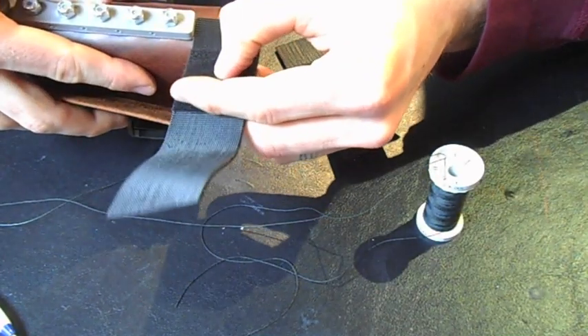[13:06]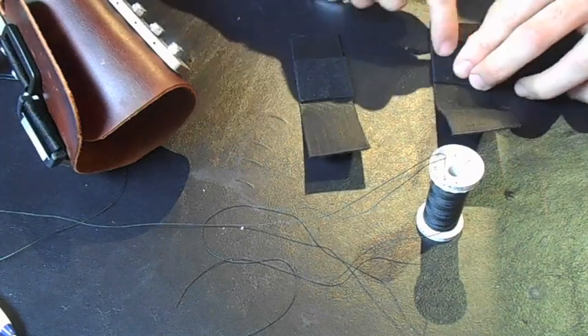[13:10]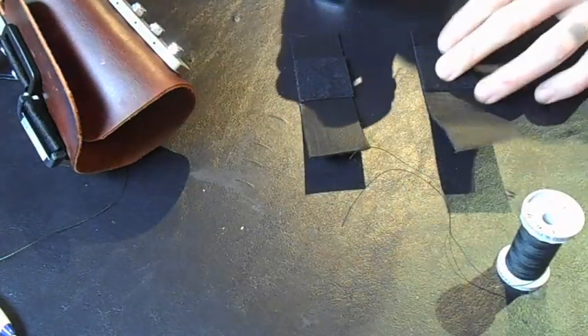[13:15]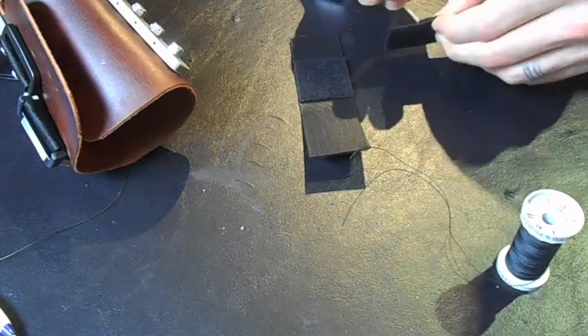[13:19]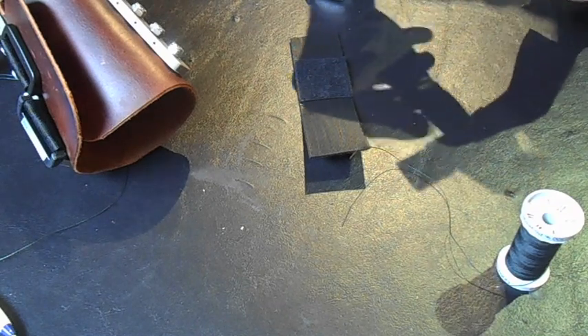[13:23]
Alright, so now I went ahead and cut a couple of short pieces of Velcro, which I'm going to put soft side up so that after this loops through the bracket, it can fold back over onto itself and grip. And what we'll need to do is we'll need to sew this on here. Leaving enough space on this end for this to slide in between the frame. And we're just going to use a needle and thread. This is some pretty tough material. So if it doesn't go through easily using your fingers, this looks like it'll be okay. You can always use a pair of pliers to assist you.
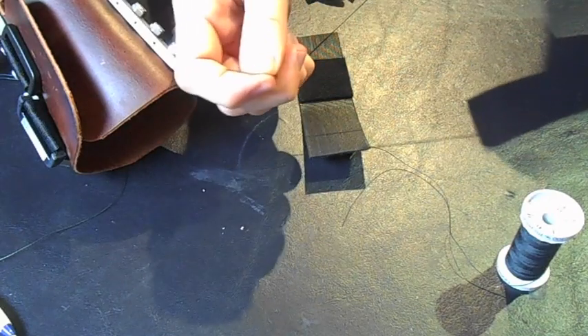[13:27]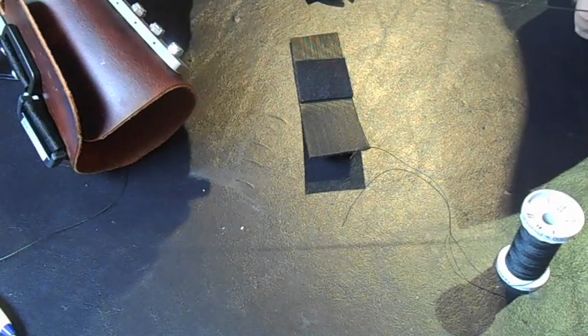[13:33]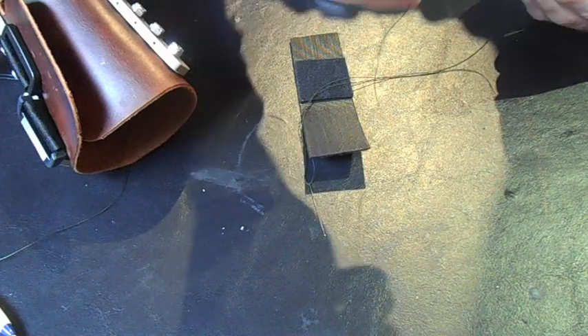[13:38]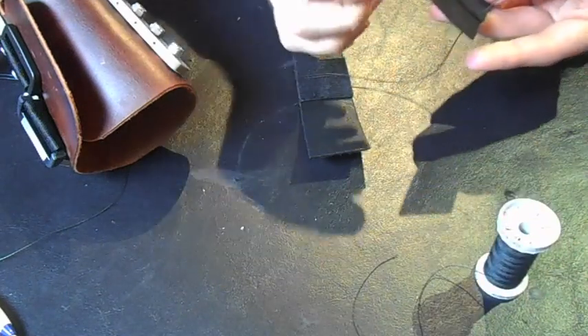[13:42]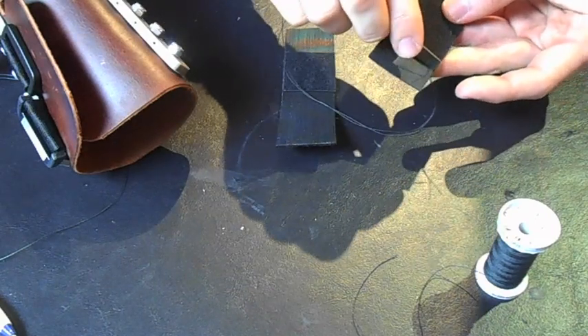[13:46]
And what I'm going to do is I'm going to use thread that's been doubled up, so that first off it's a very heavy thread, and then I'm doubling it to make it even stronger. And this will just be a standard back and forth stitch going all the way around, coming back here, and then you can tie it off.
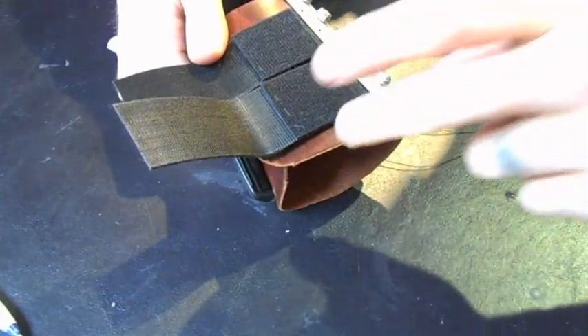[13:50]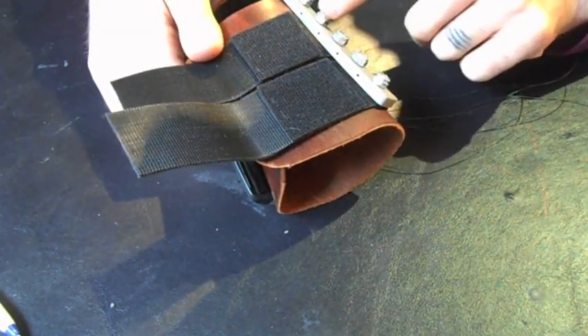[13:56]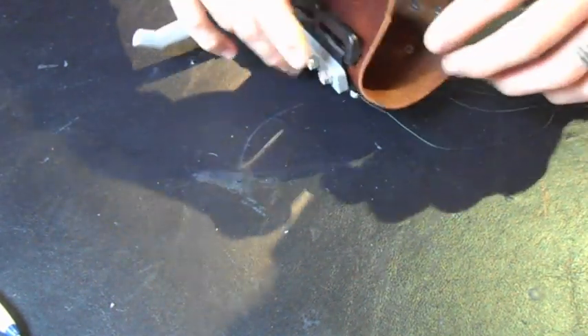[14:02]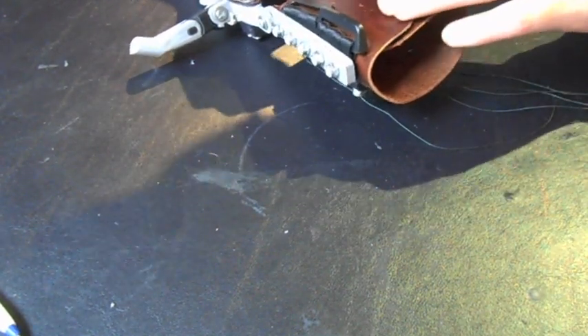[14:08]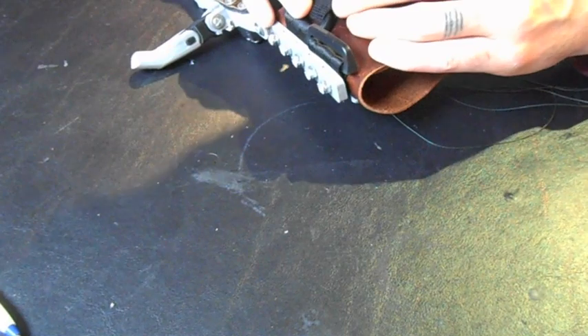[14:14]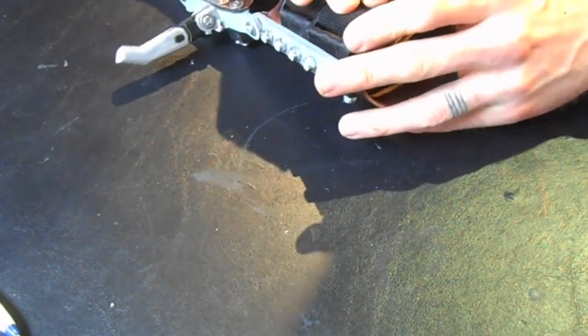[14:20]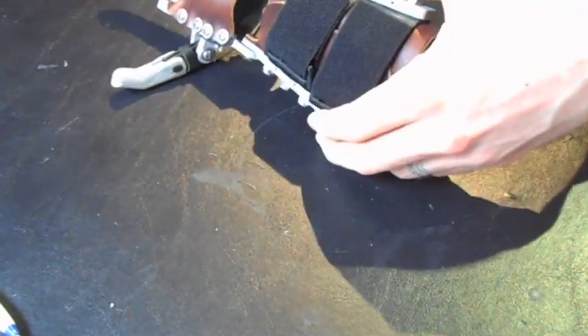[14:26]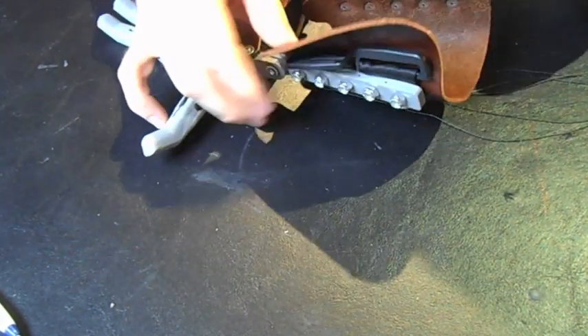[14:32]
Okay, so the patches have been sewn on. The Velcro straps were installed via the same method that I showed earlier for installing these brackets. And now that this is all together, the longer leather strap can go down, the smaller one can go over. This can be slid through and secured. Same thing on the back here, slid through and secured. There we go. And that will provide the adjustable closure system. And then to remove it, it's as simple as that.
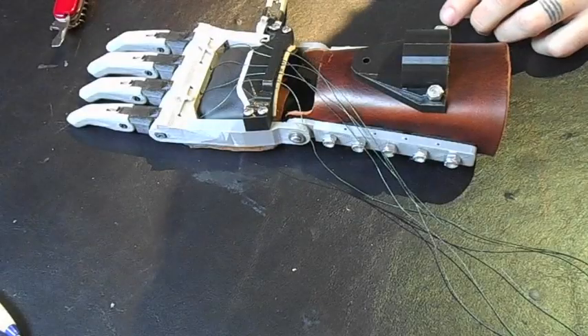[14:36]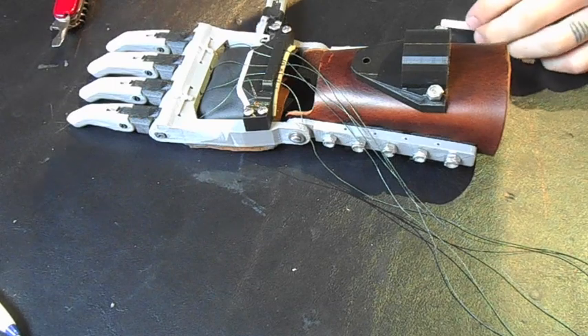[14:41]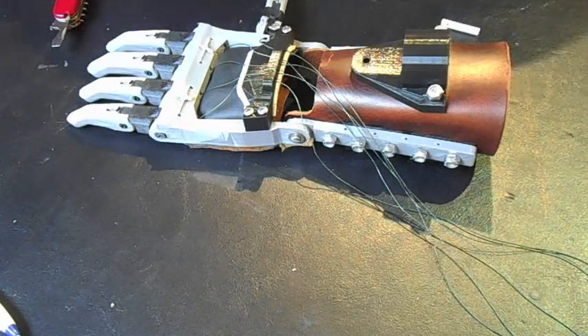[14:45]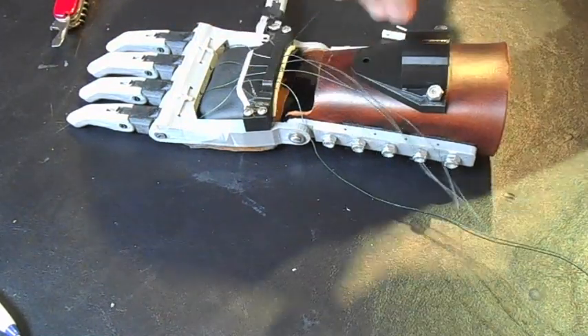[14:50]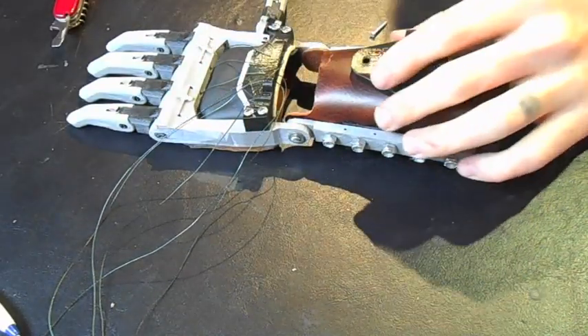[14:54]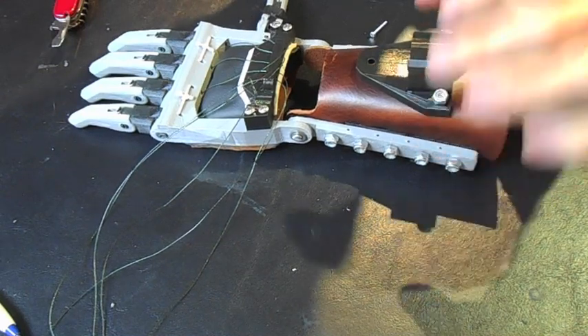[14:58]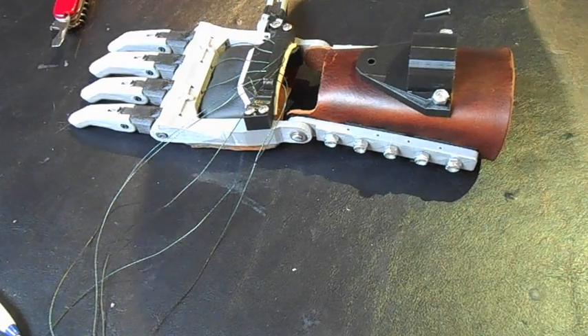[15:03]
Okay, so the last thing that remains before we move on to dipping the fingertips in some Plastidip is to set up the tensioning system and anchor the cables. So this is the 5-slot cable tensioner, co-developed with Frankie Flood and David Ogerman, also with some ideas thrown in there from various other members of the group, including Paul McCarthy.
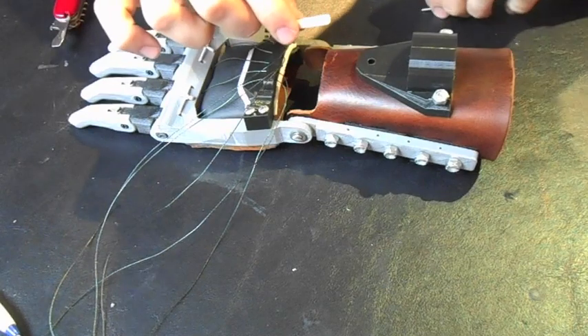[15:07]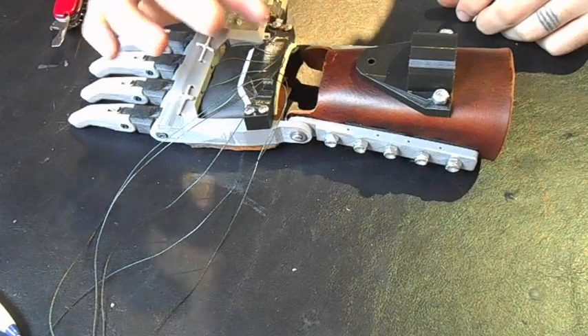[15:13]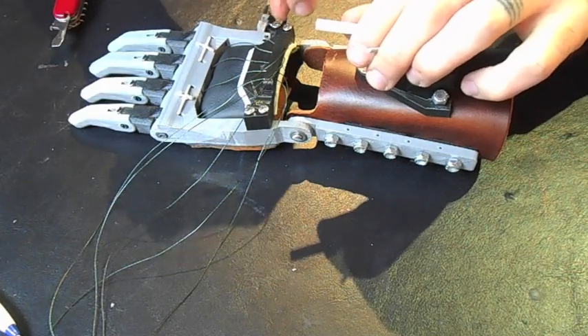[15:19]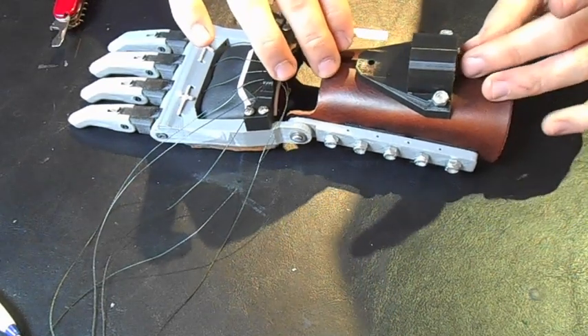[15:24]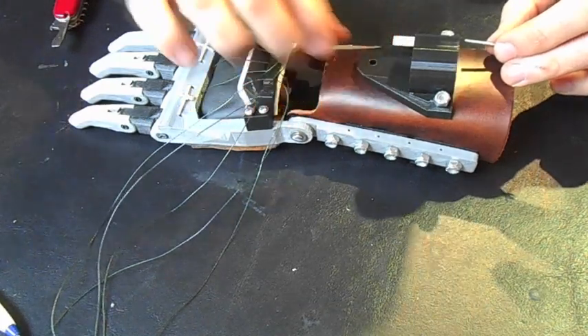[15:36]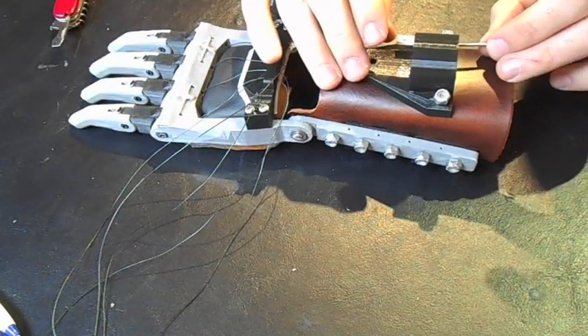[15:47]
And it consists of 2 parts, well, 3 parts. So we have the base, these hexagonal pins with a hole in them to receive a machine screw, and also a hole on the other end for the cable. And then it fits together like so. So I'm going to start with the anchor for the thumb, which will be this one. And what we'll do is we'll put this in and orient this at an angle so that we can access the slot easily later. So like that, so that we can get to that hole for the cables.
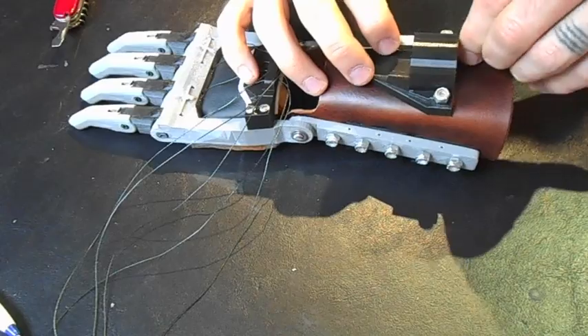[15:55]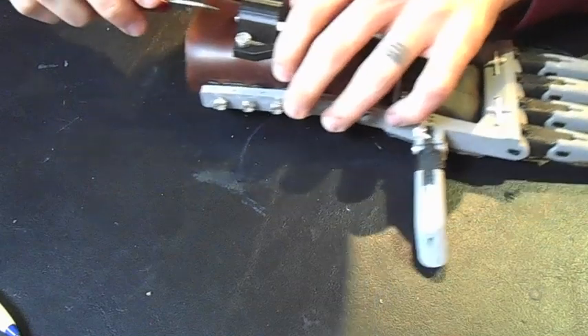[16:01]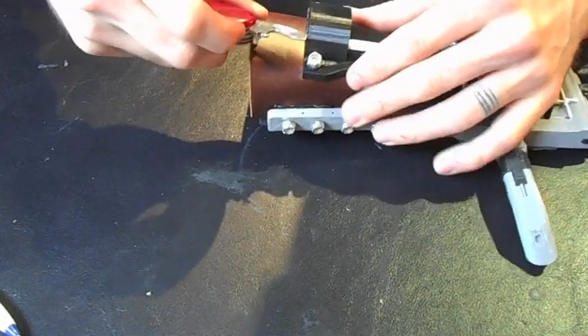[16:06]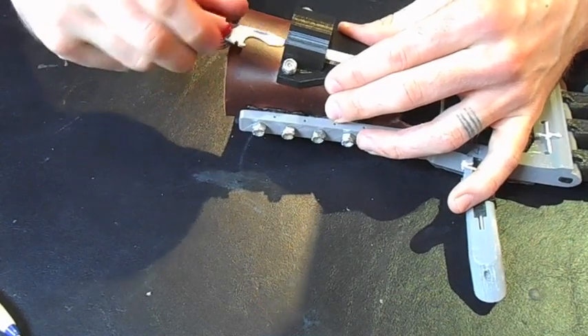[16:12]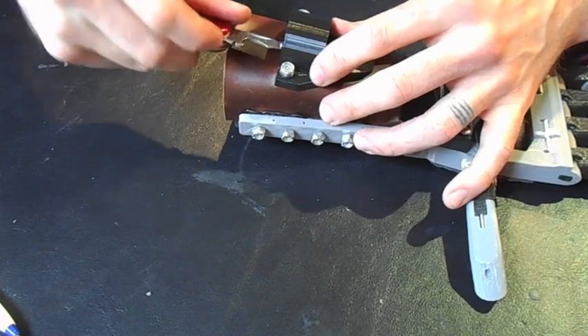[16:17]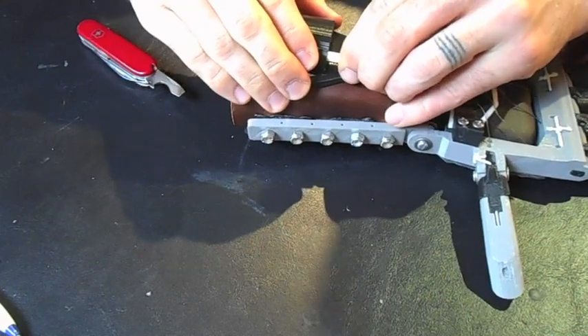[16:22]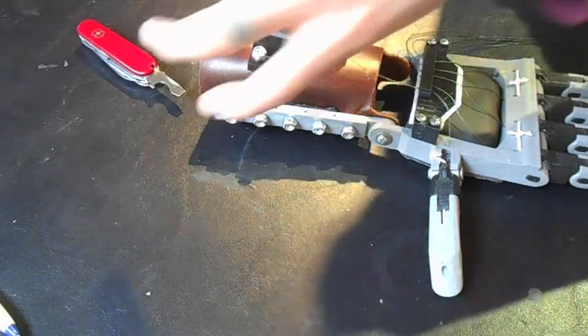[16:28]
The machine screw is going to go from this end, and you're just going to get it started in the hole in the base of the hex pin. Okay. After you have that started, flathead screwdriver, and give it a few turns, and you'll notice that this should start to pull in. I don't know if it'll show up on the camera, but this will slowly start to pull into its slot. So after you've given it a few turns to make sure that you've got the screw started well in the hole, just give it a really firm pull, make sure it's in there. Then it's ready to have this anchored to it.
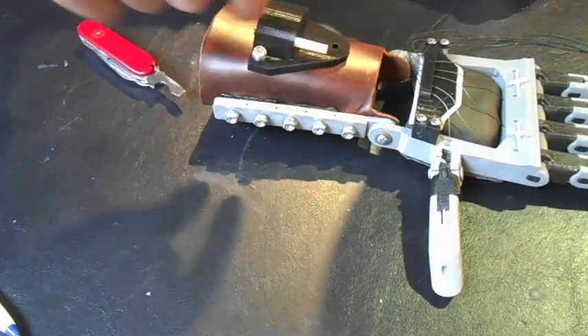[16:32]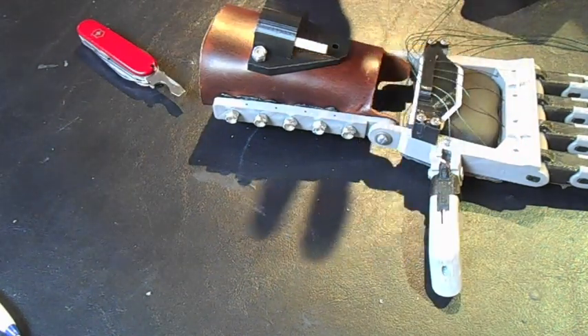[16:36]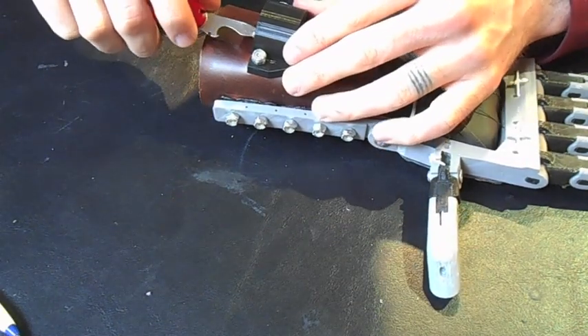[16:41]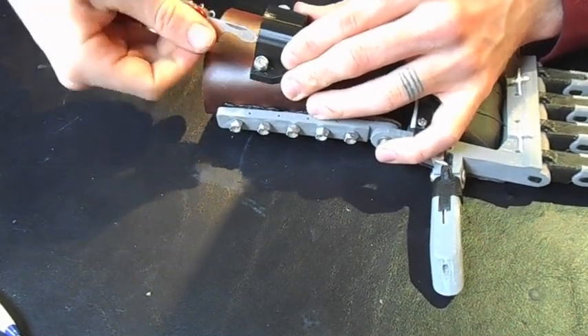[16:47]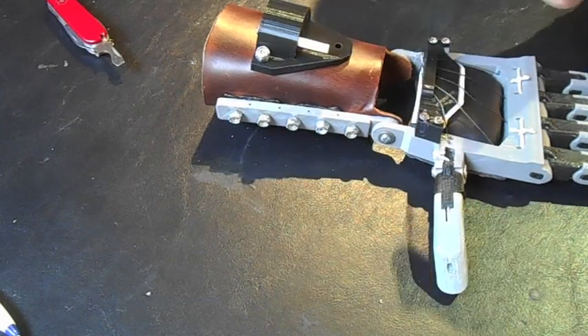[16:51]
I would actually go ahead and tighten it until it's about midway into the hole. That way you have the ability, after you've tightened the cable, to adjust the length in either direction. So what I would do is I'd just keep going until it's midway into the hole. Okay, so I'm going to do this for all the other pins, and then we'll move on to attaching the cables.
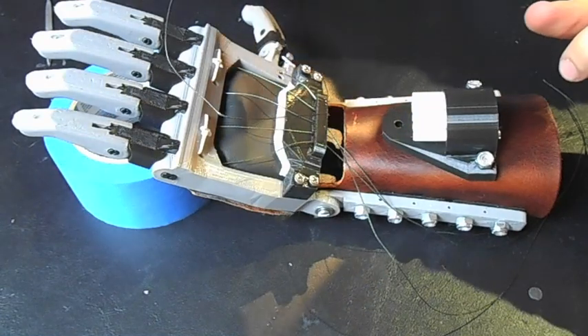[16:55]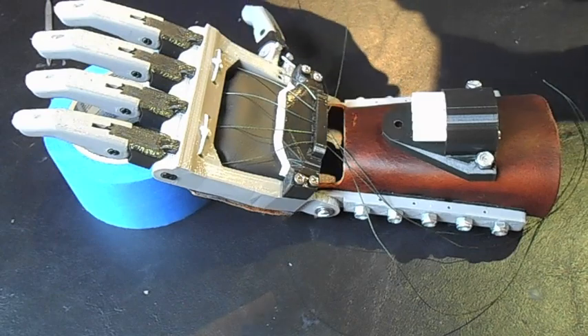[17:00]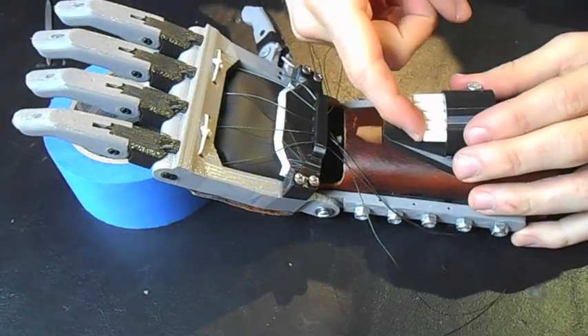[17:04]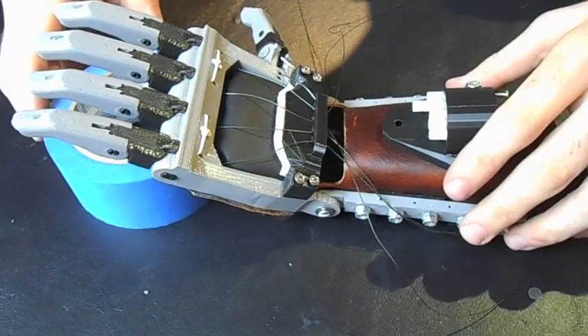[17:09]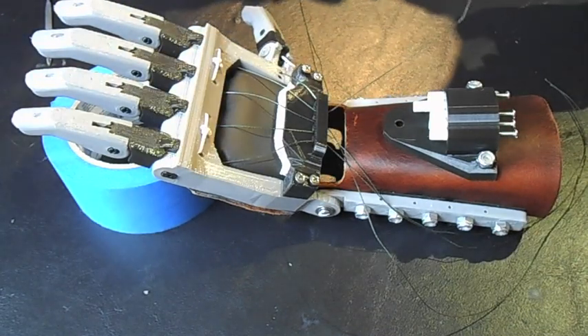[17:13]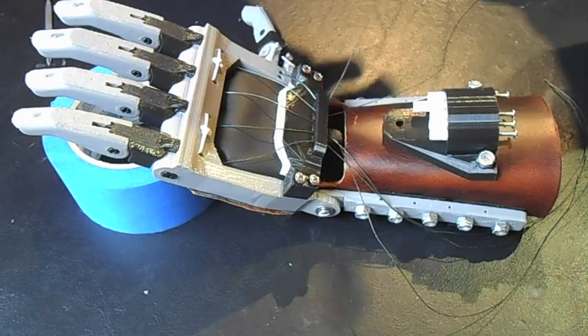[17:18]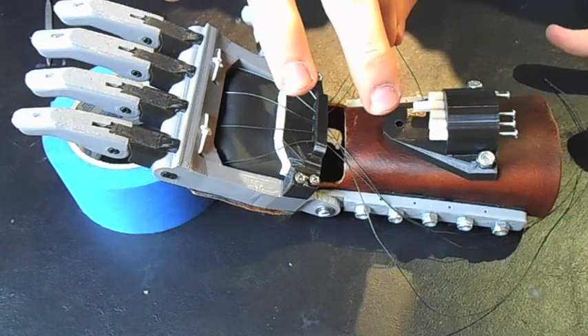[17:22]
Alright, so next I'm going to attach the finger cables to their anchoring points on the tensioning block. So I'll just push some of these out of the way here. I'm going to start with the index finger, and then basically tie the others so that the tension is similar to that one. That'll also help me to figure out where to start with the thumb. So we're going to take our fishing line and go through
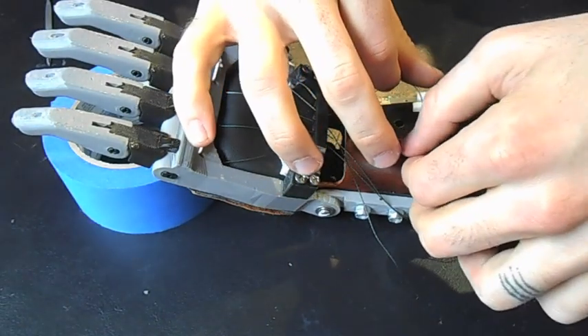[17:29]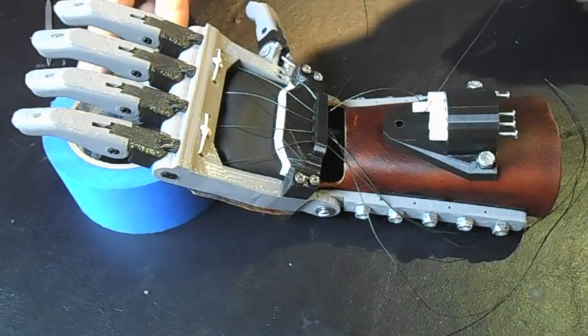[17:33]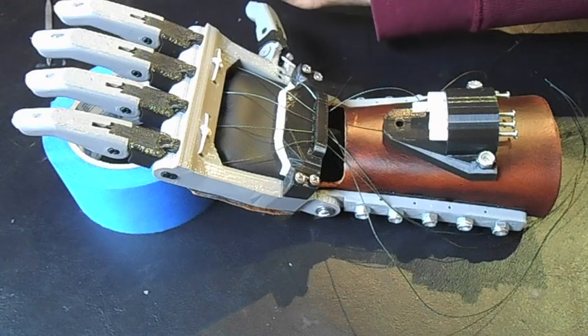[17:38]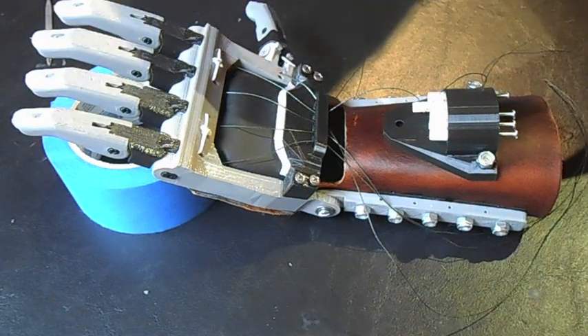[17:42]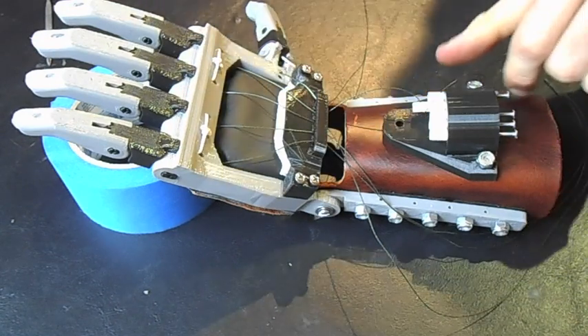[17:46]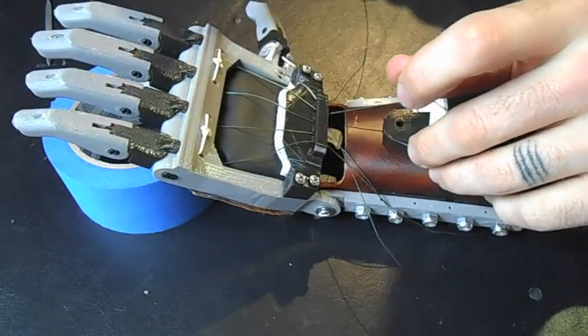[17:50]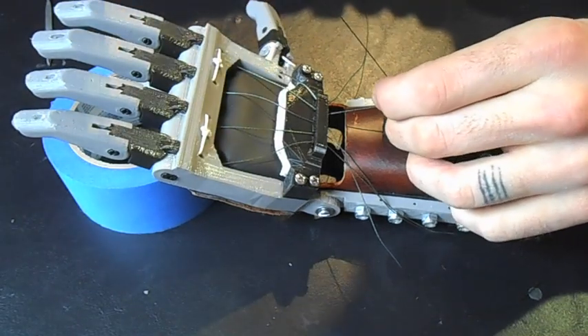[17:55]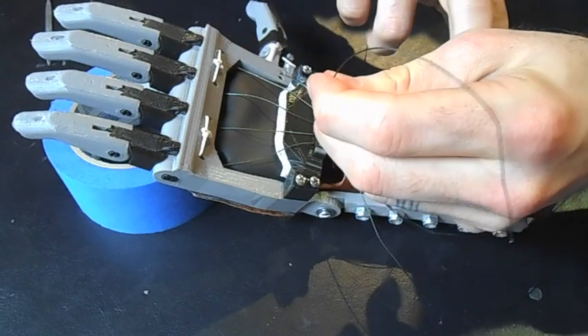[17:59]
the anchoring hole. And I have this up on a roll of painter's tape to hold the wrist in the fully open position, which for this person is going to be about here, and then this way the fully closed position will be at an angle about like that. So I determined this angle by looking at photographs. Okay, so I'm just going to tighten this until I start to see the finger wiggle a little bit.
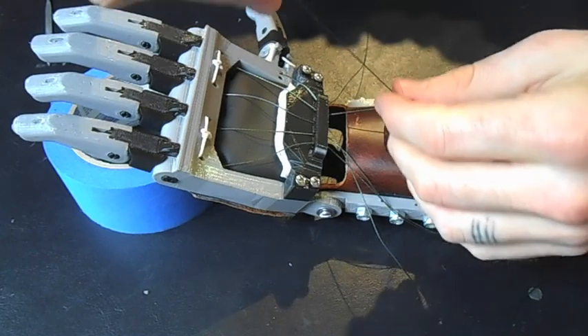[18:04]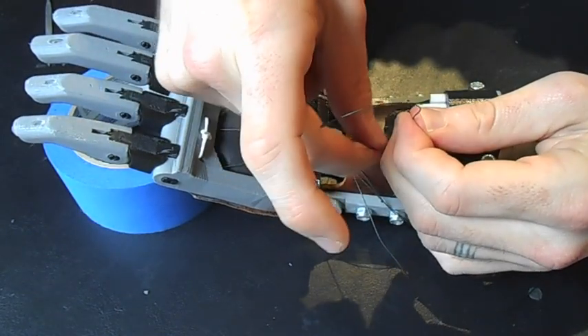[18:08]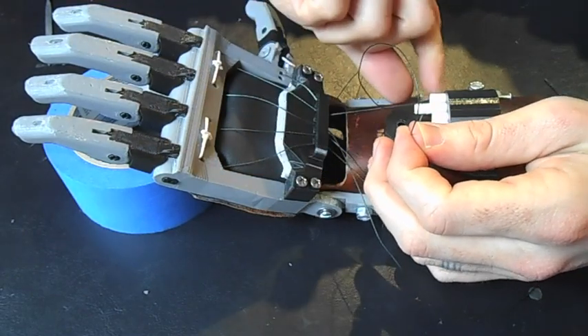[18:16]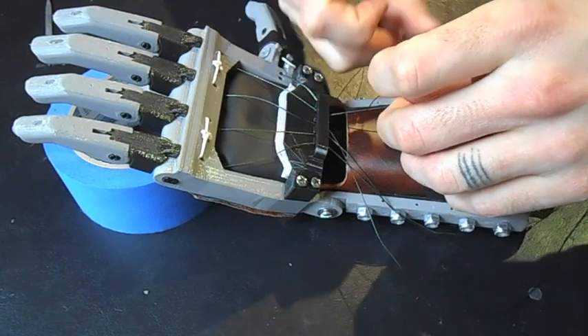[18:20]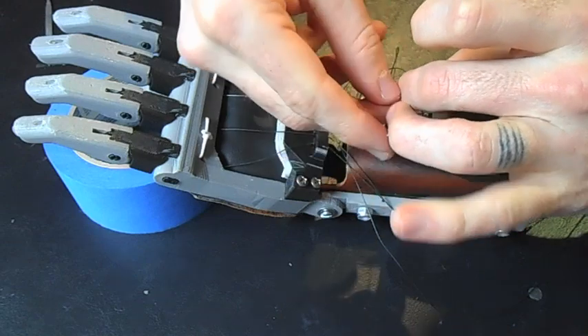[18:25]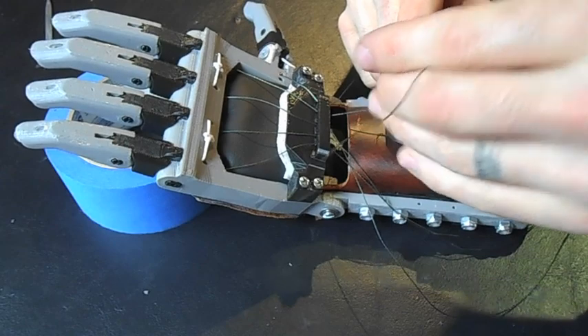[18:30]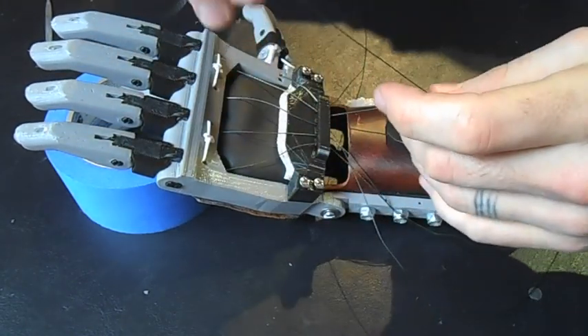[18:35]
You see? Okay. The nice thing is, if this isn't 100% spot on, then we can adjust this peg back and forth to fine-tune the tightness of the fingers. Sorry, or rather the length of the cables and therefore the point at which they get pulled. I'm going to just tack my finger onto there so I can put my first hitch in this.
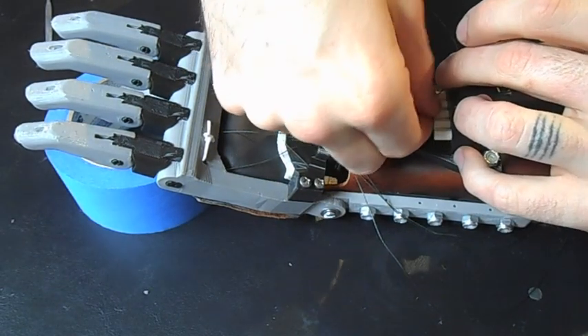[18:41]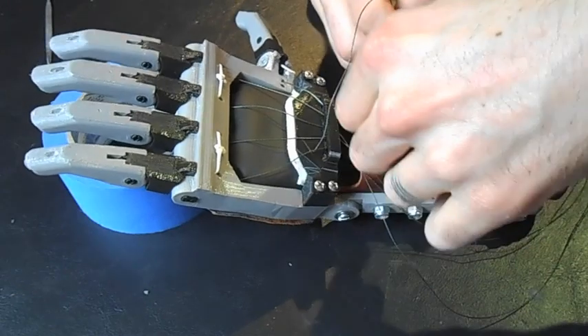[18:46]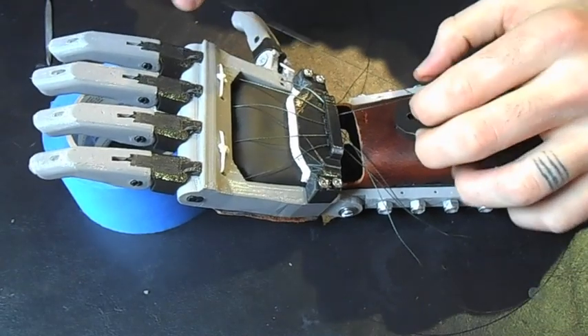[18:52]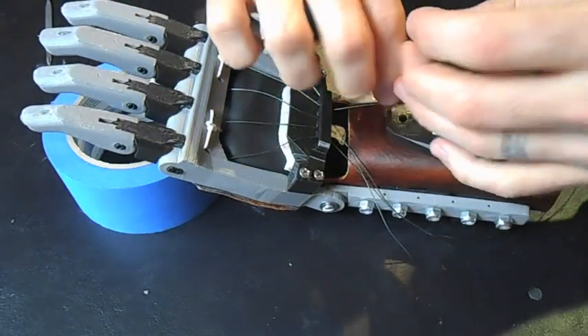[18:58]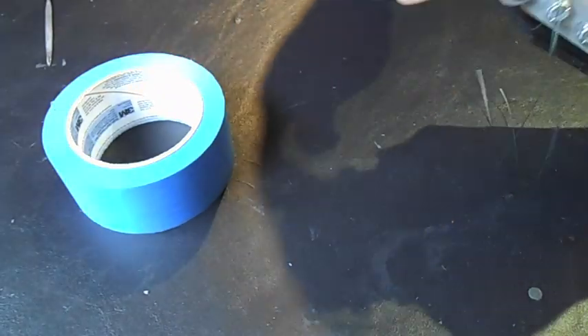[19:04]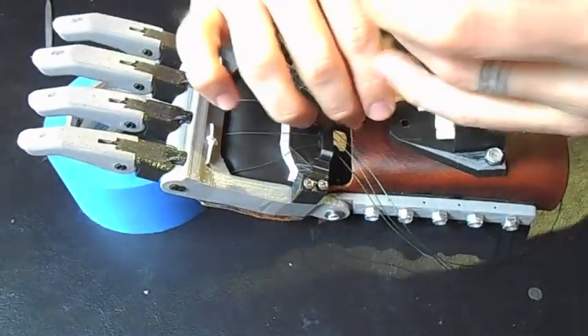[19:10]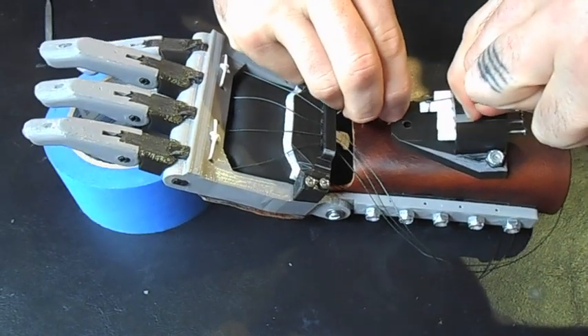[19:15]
Okay. Come through the loop. I'm just going to tighten this down really tight. What I'm going to do is create a series of hitches like that. And you can see now we have it tensioned for that. There we go. So first I'm going to check this, and yep, that's about right. And like I said, we can fine tune it later. I'm just going to pile on a series of half hitches, and then after all of these are tied, I'm going to go back through with some super glue.
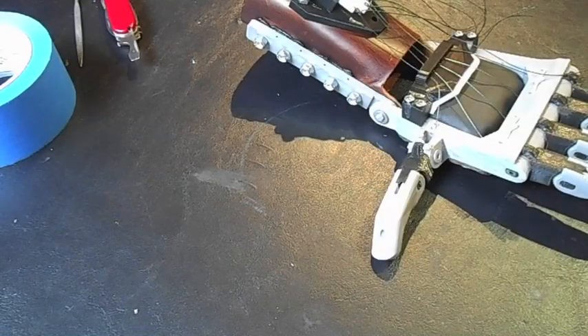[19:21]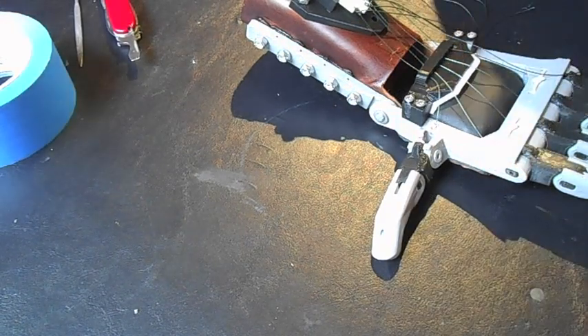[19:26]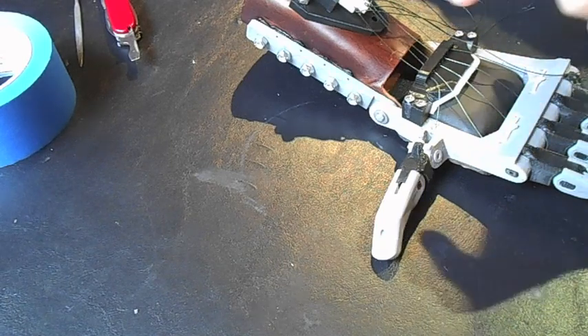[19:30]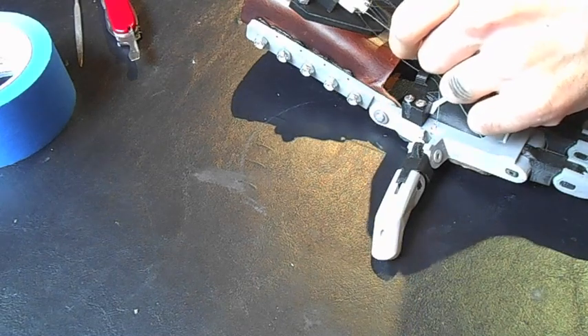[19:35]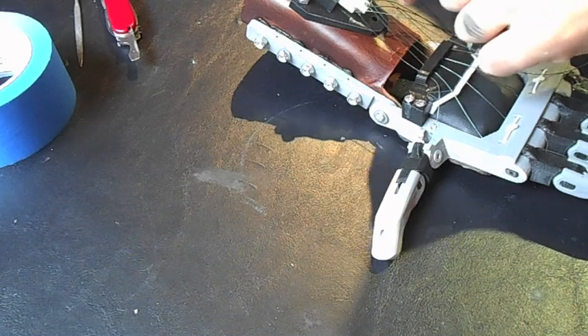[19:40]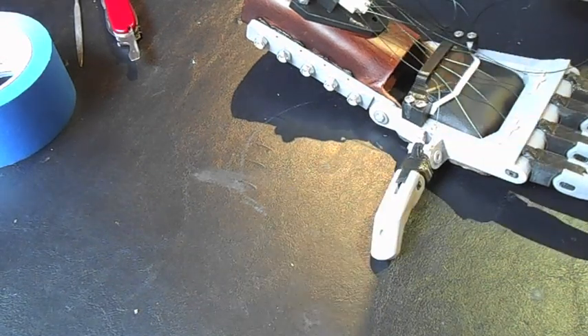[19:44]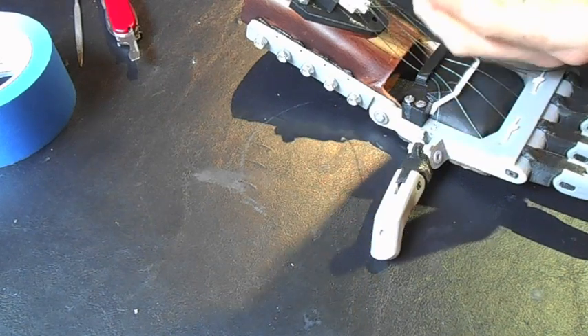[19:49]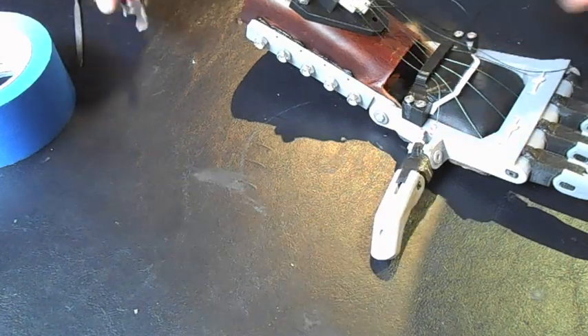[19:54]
Okay, so unfortunately my battery cut out on me, so there's some steps that are missing. So what I did is I finished off tying the cables on, and I applied a little bit of super glue to each of these knots, just like we did for the elastics. And once it dries, that'll keep it from unraveling. And then later, after it dries, I'm going to go through and just trim off the excess cable.
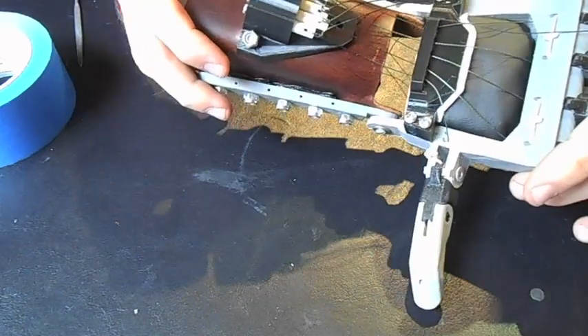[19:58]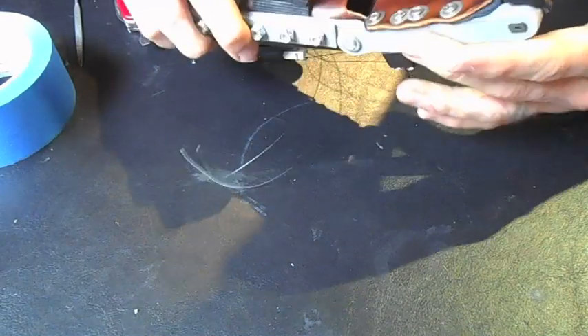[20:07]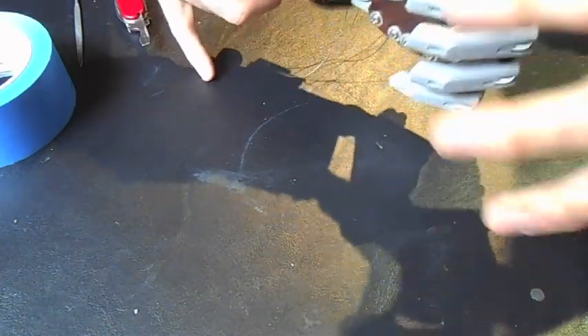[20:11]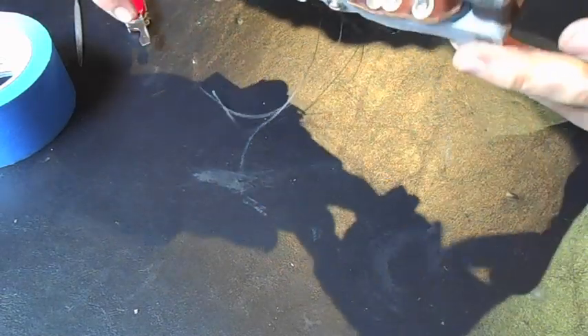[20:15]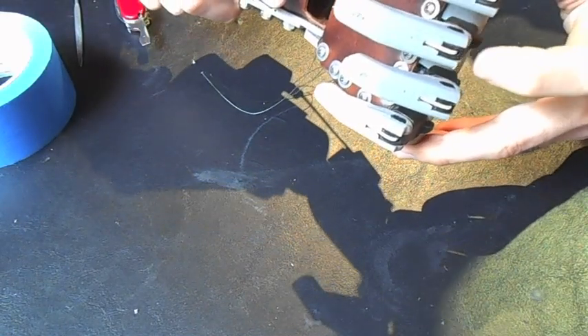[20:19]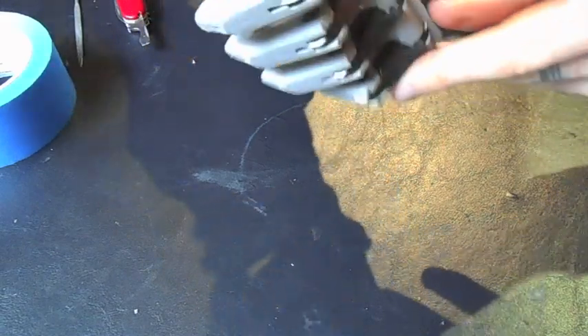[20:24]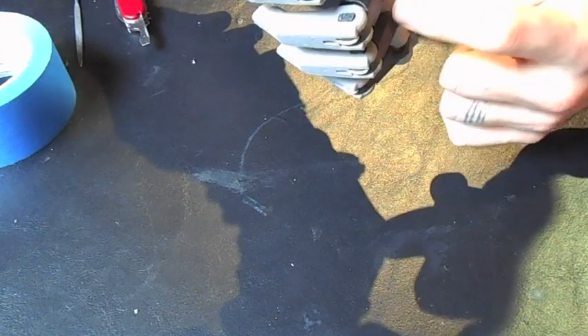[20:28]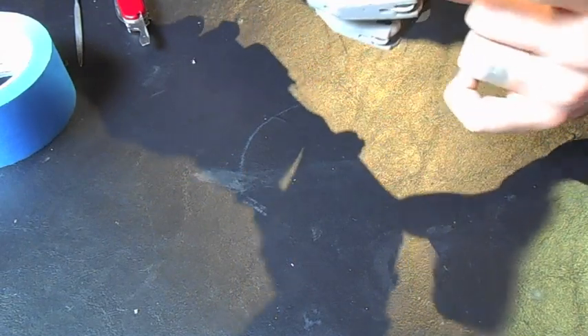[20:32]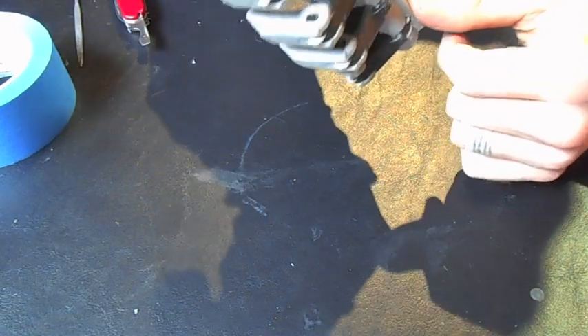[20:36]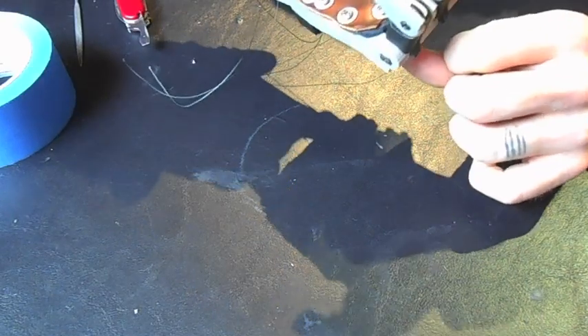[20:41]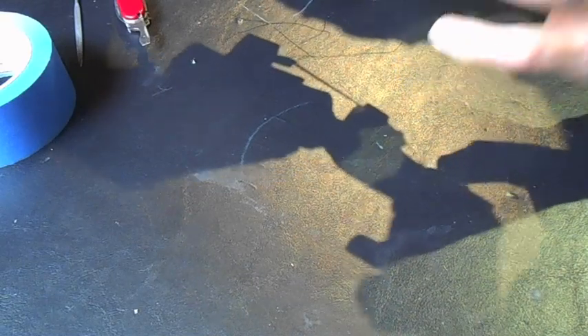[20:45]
Also, you'll notice that these pins are now at different heights because I adjusted it. I started adjusting it so that the fingers close at a given rate. So now you'll see that the thumb and index finger meet up with each other. There's a little bit more adjustment that's needed to bring this middle finger down slightly more, but actually that's going to just be through lubricating this joint here. So you can see when it closes, because there's a little bit more friction on this joint than this one, this one's curling down first. So if I apply a little bit of lubrication here and here, then these fingers will close like that instead. Also, I tightened the pinky further than the other fingers.
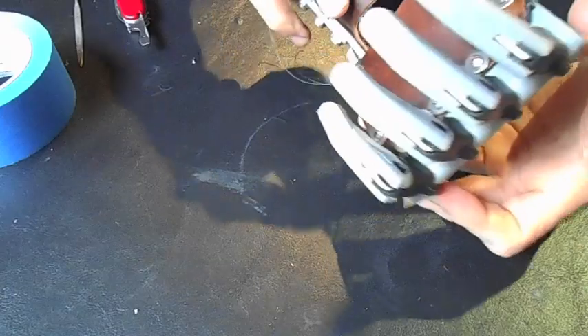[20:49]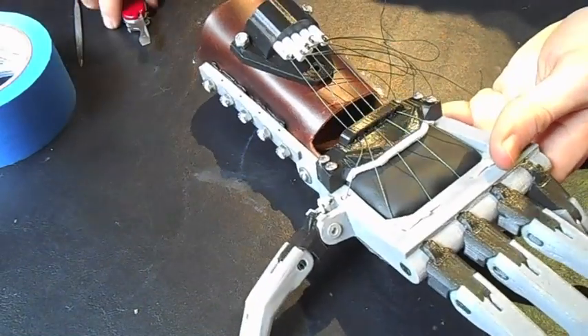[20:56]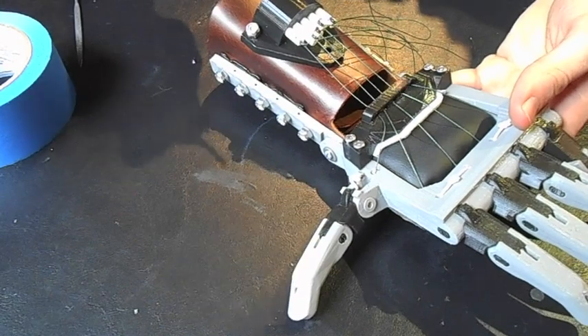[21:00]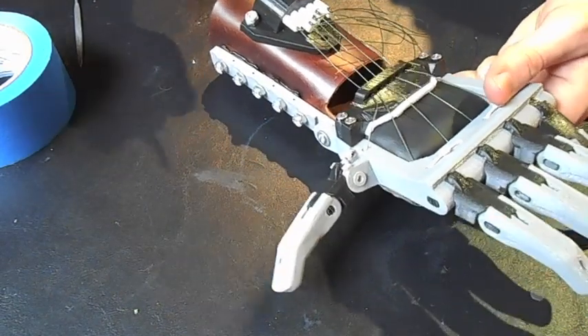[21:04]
This is from a suggestion from Peregrine, because he's found that the pinky can sort of act like a shelf for larger objects when he grabs them. But again, this is something that once the recipient gets it, this can be adjusted to calibrate the fingers to his liking.
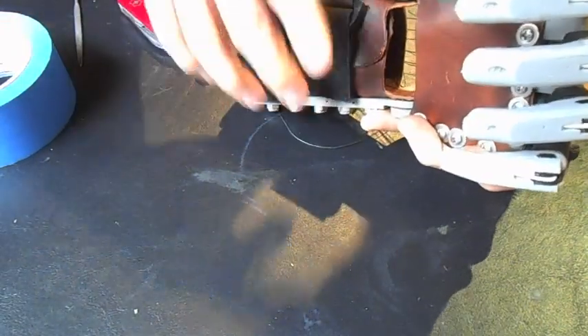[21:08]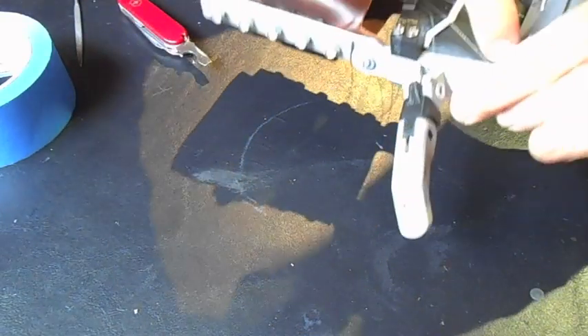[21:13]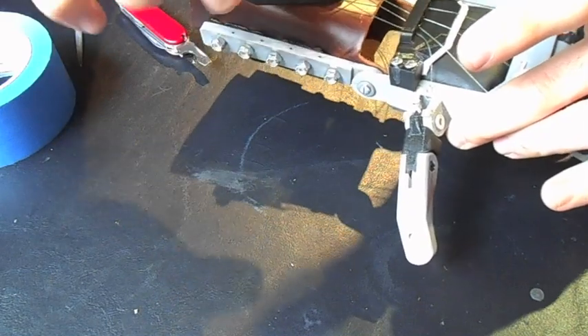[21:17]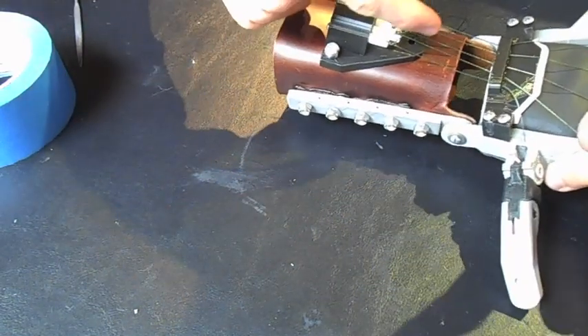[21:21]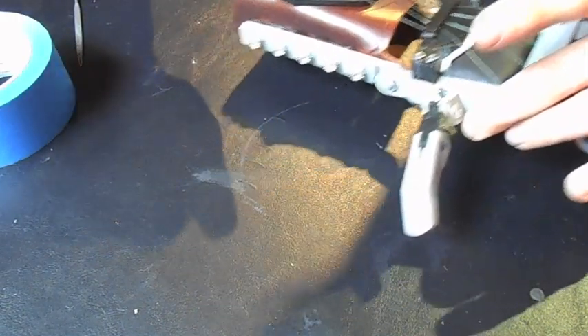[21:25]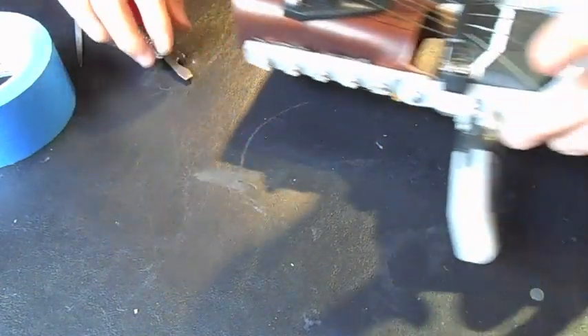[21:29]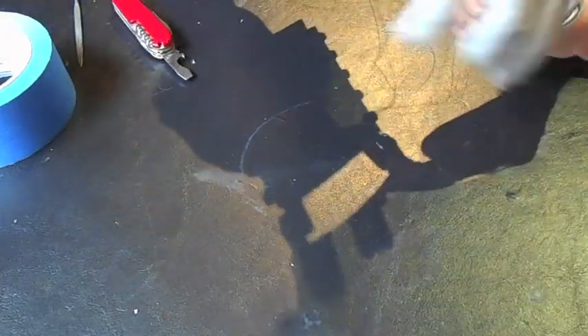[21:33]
If you want to adjust a finger so that it closes sooner, so let's say we trace back to the index finger. If we wanted to adjust the index finger so it closes sooner, then we would tighten the screw on the back, which will pull this in further. If we want to adjust it so that it closes later in the wrist motion, we would loosen this screw in the back to push the pin out further.
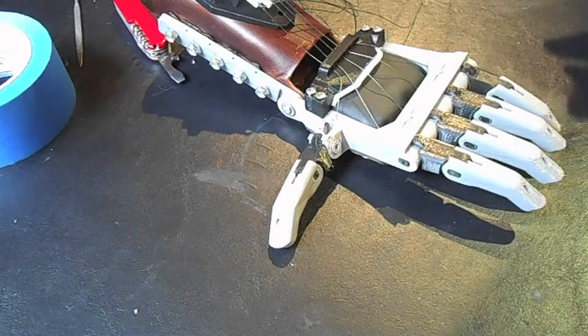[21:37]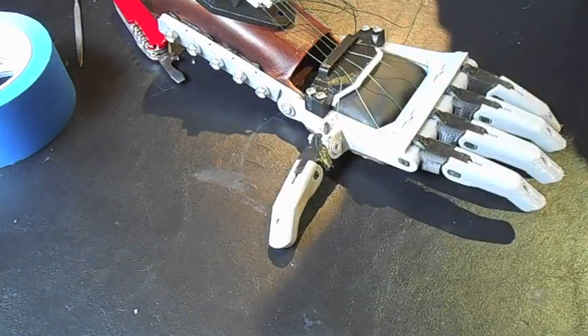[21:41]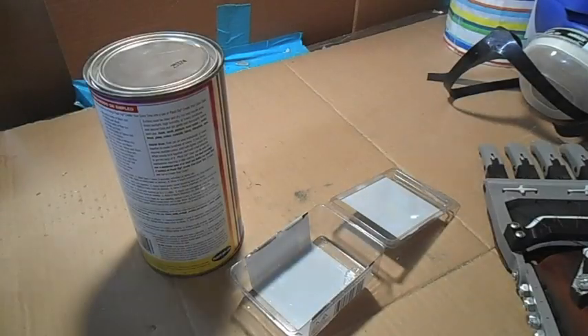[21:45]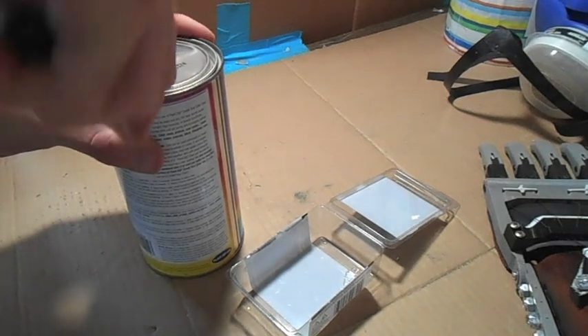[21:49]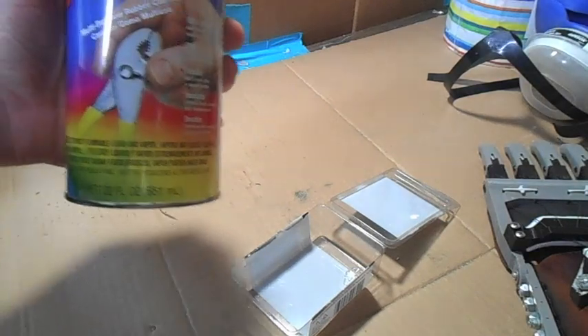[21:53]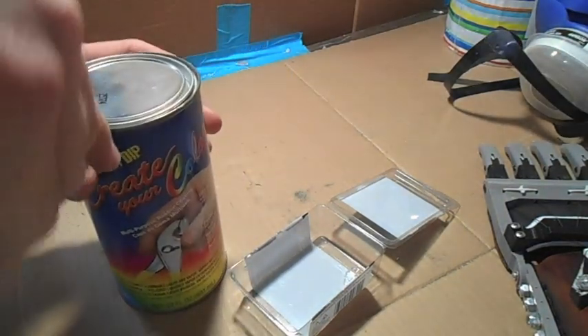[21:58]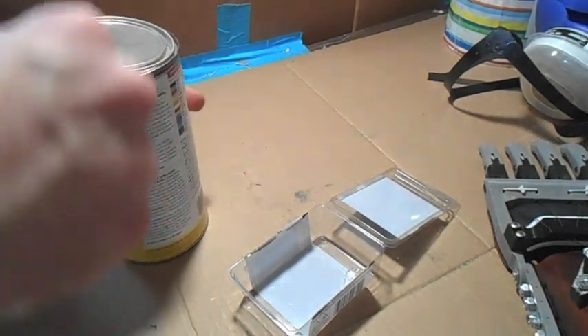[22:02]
Alright, so next I'm going to show dipping the fingers in Plastidip. Okay, so the last thing that we're going to do is apply Plastidip to the fingers. Plastidip is a kind of tool dip for creating rubberized coating, and it'll give the fingers grippiness. This can be found at most hardware stores or obtained online.
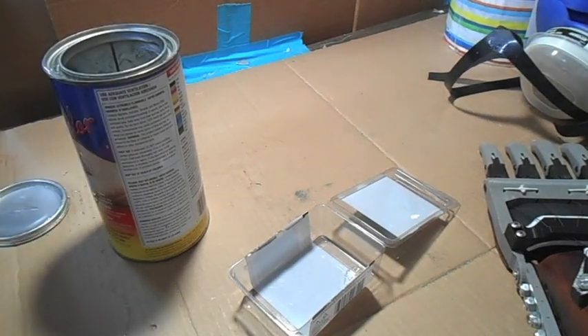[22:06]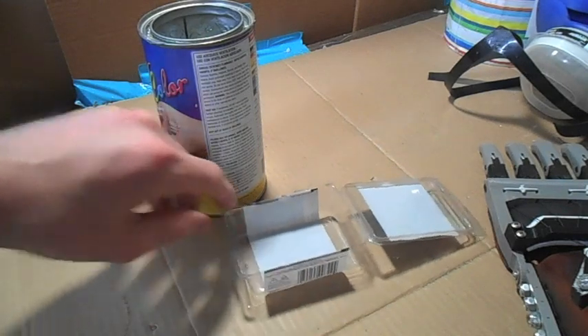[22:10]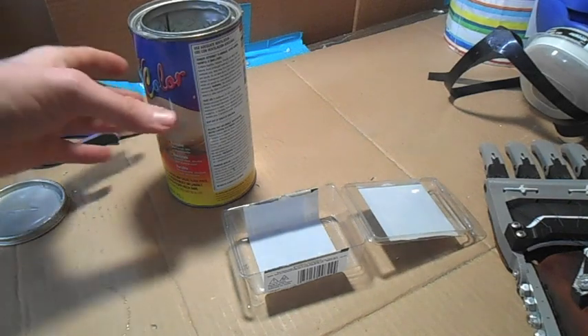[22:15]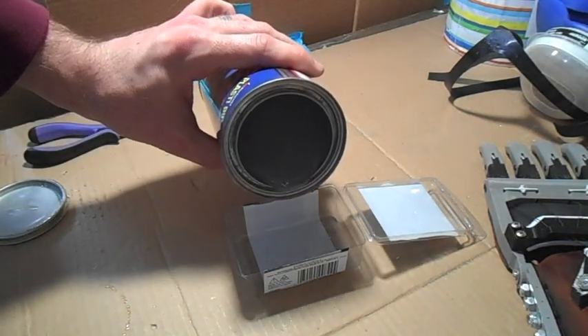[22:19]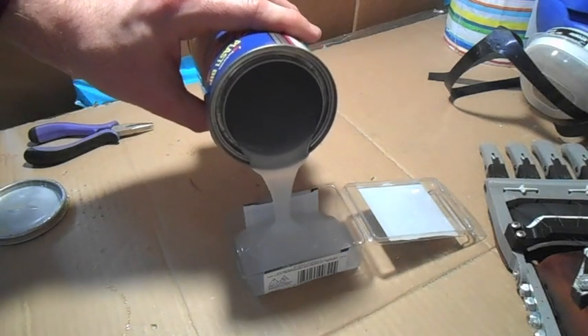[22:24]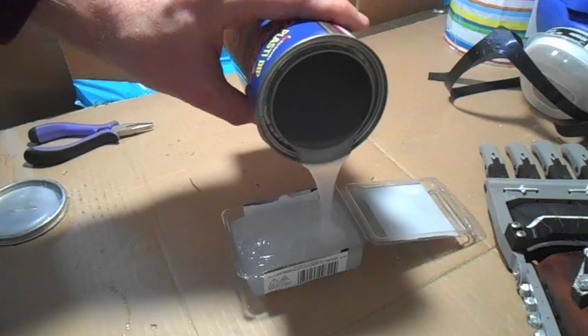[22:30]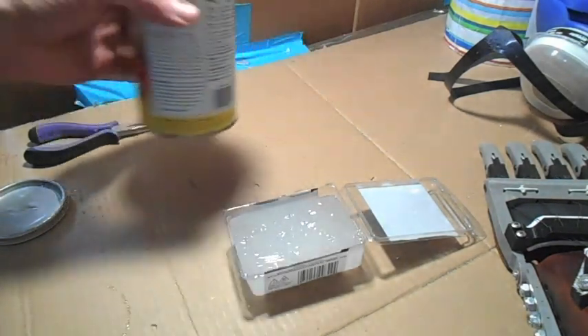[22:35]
And I moved out to the garage for this because you want to do this in a well-ventilated area. This stuff has some pretty nasty fumes, so I've got a ventilation fan running, and that'll help to deal with that. So I'm going to pour some of this into a container that I don't care about, because afterwards the container will have to be discarded. But we can pour what isn't used back into the can. So have a nice depth of that there.
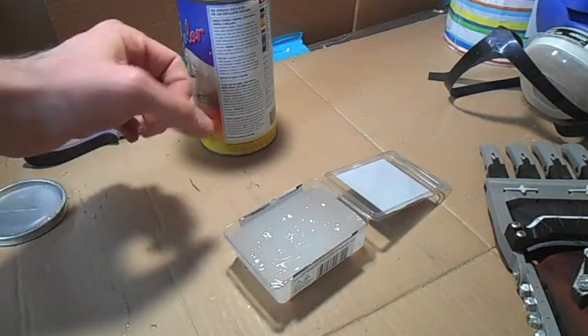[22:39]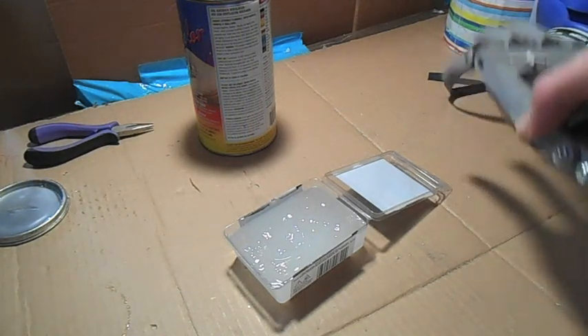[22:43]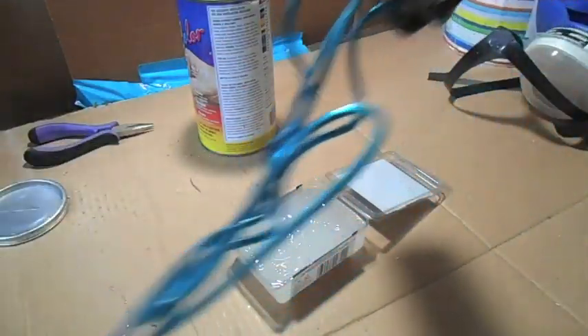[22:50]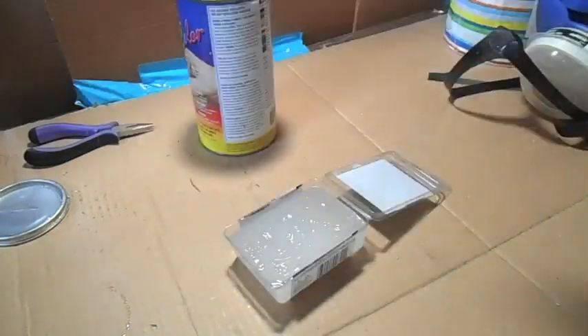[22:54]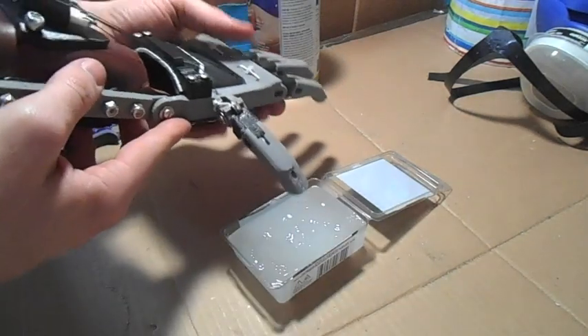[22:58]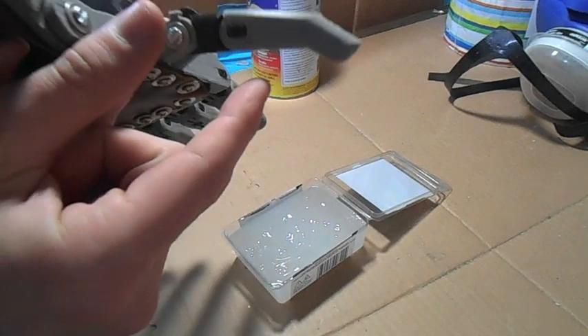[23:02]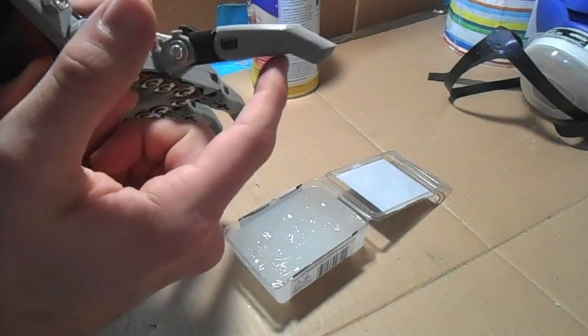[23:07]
And then you just want to follow the instructions that are on this. You want to dip this slowly in. I've hooked up to one of the brackets underneath some scrap wire that I have so that I can hang this up to dry afterward. That's another really important part. So, starting with the thumb here, we're going to dip it in, but we don't want it to get into the cable channel, so we're just going to dip it into about here and create a coating.
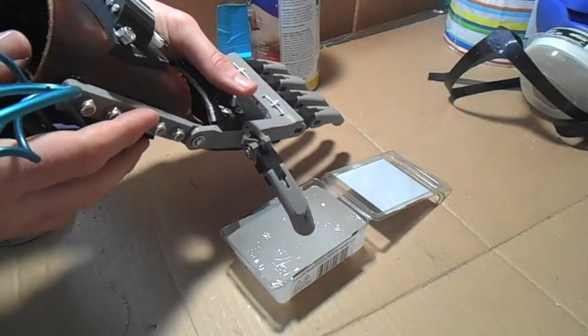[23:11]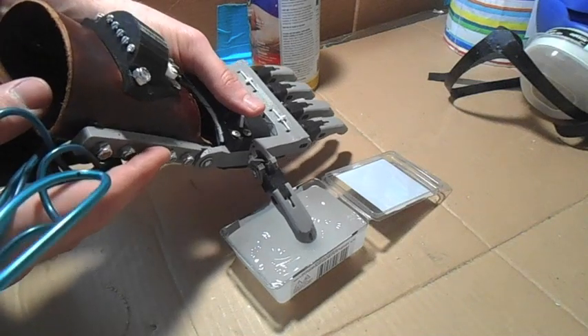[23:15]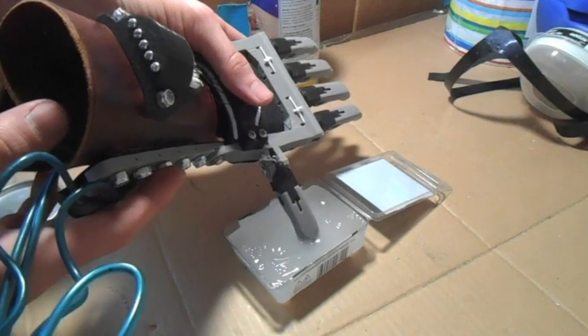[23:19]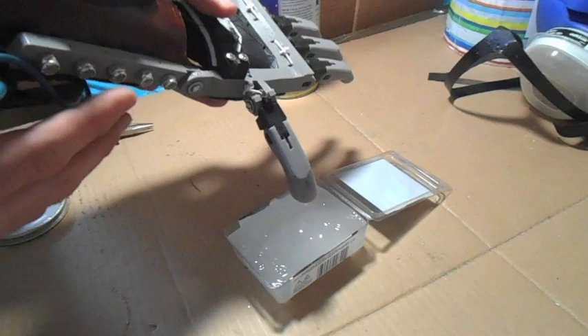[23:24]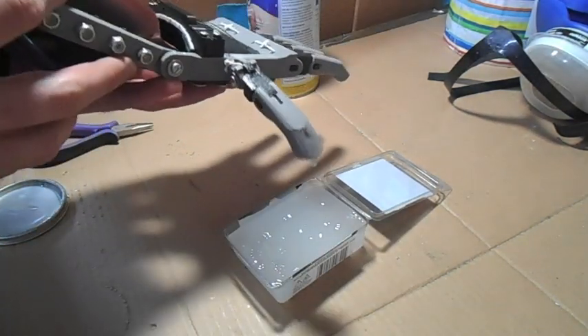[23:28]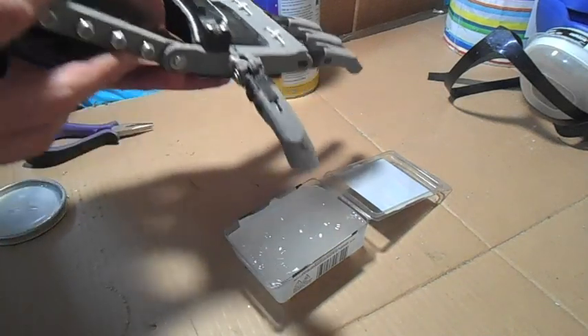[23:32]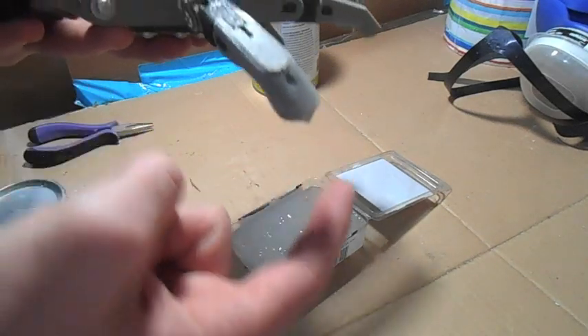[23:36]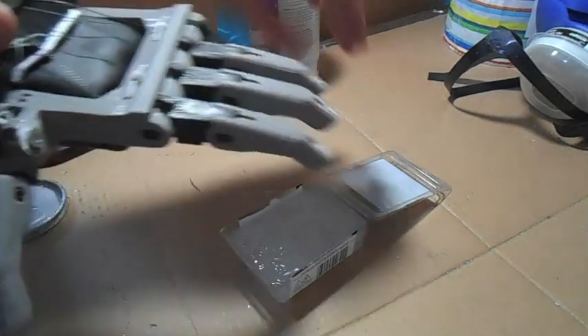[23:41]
So we're going to go slowly. Alright, and also kind of immerse the bungee hole, and then slowly pull it out, allow any excess to drip off. You can even see how there's a little bit of excess there. You can kind of pull that off by dipping it just ever so slightly in, and then this little tip that's sticking out, that'll shrink up as it dries.
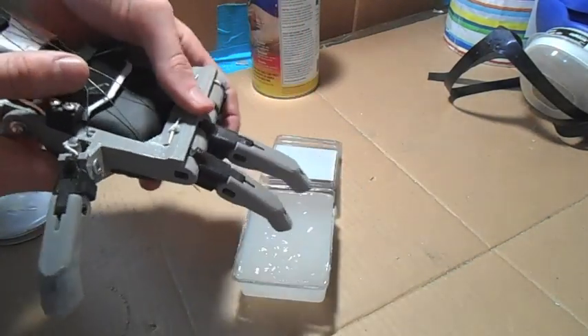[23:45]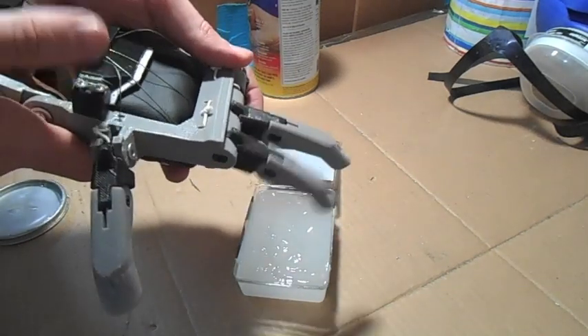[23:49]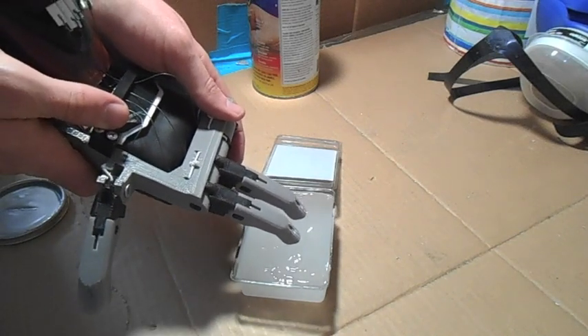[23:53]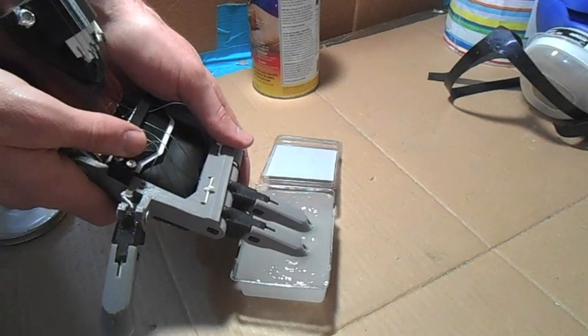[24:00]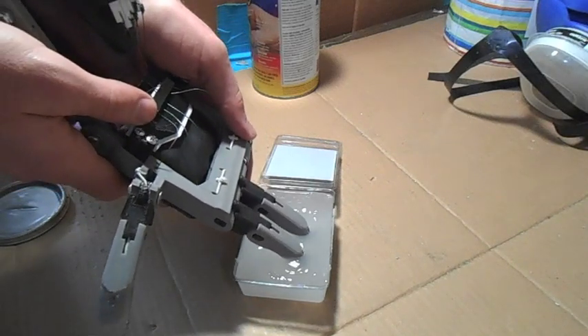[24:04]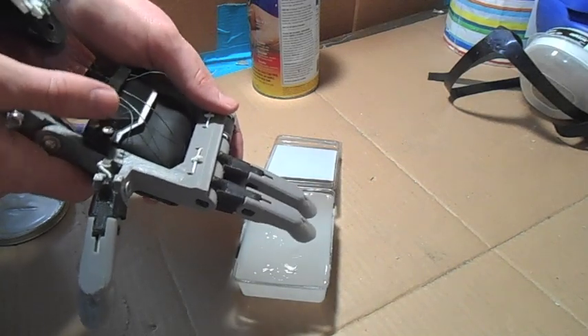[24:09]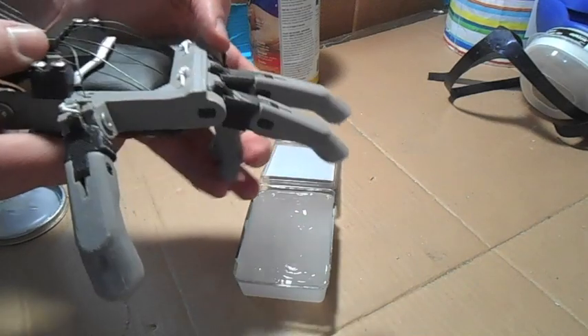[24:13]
So we're going to do the same thing, 2 fingers at a time because of the size of my container. I'm bending the wrist up so that the fingers don't bend at all. Okay, and then we're going to do the same thing. So nice, slow, controlled dip. 2, 3. Okay. I'm going to lean it forward a little bit and get it into the elastic holes. That'll help to just seal everything in. Alright, so we got those 2.
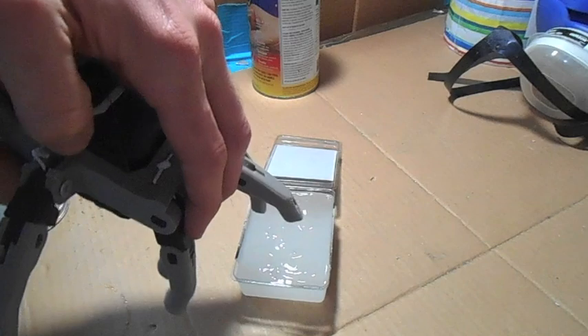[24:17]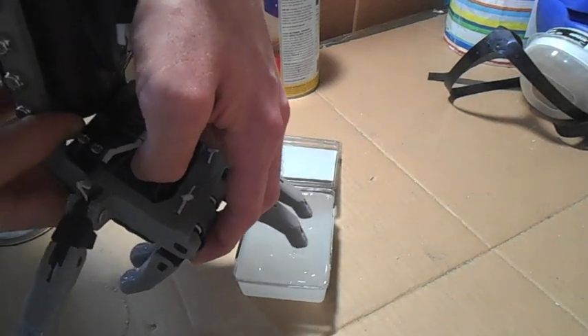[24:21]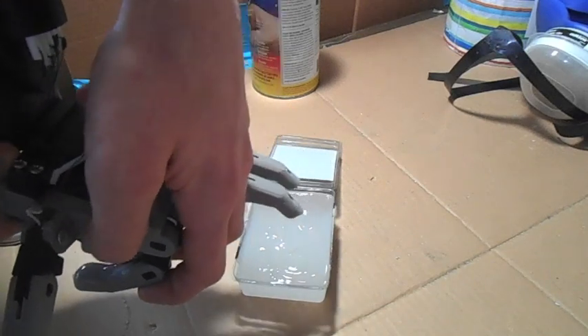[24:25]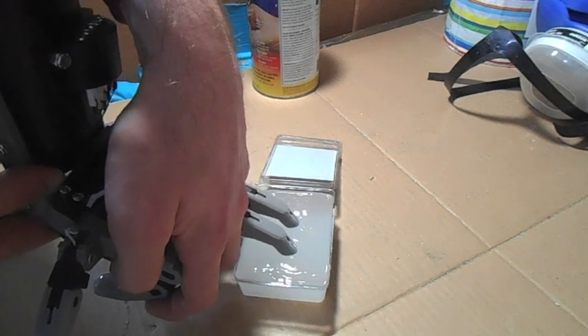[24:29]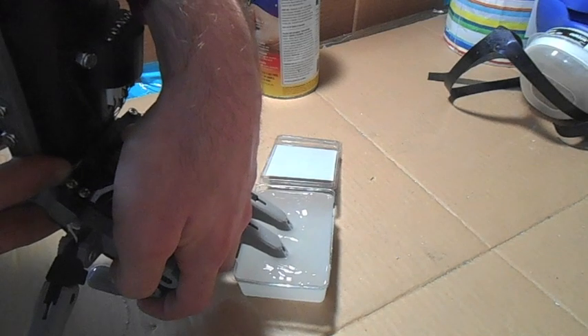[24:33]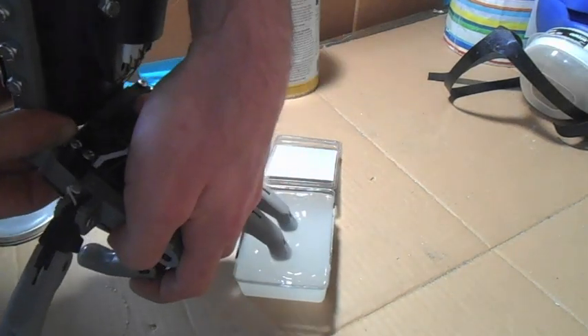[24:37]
Being careful not to touch the Plastidip that I have on the other fingers. I'm going to now do the remaining 2 fingers. I'll just curl these ones over so that they are out of the way as I do this. You can also do this to the fingers before you install them. So I just kind of did this backwards this time around. There we go. Slowly pull it out.
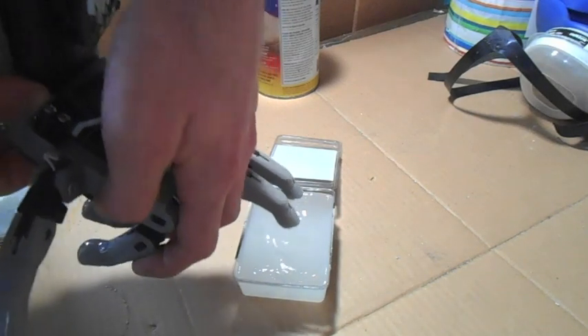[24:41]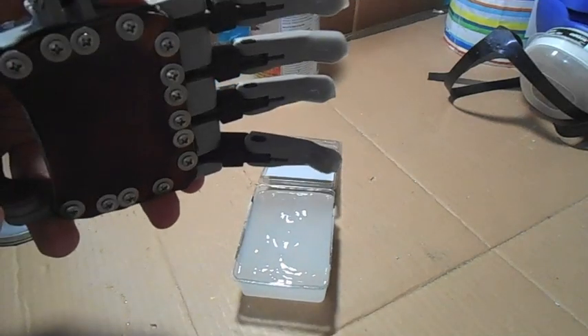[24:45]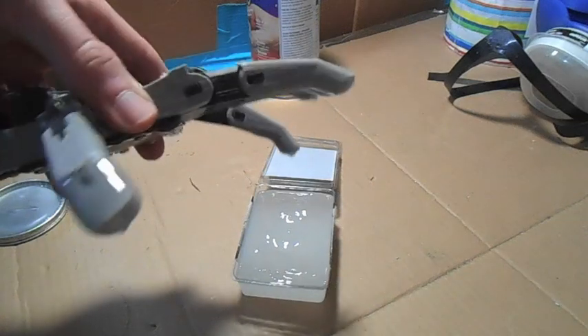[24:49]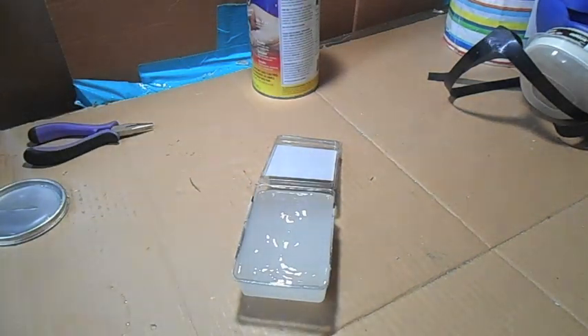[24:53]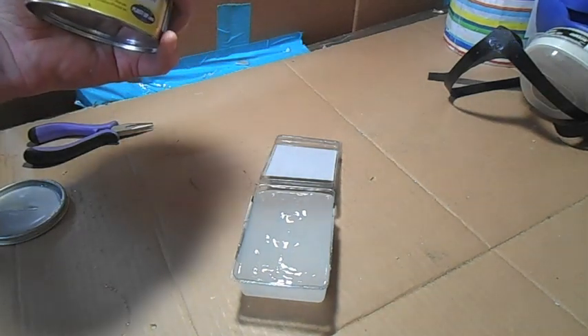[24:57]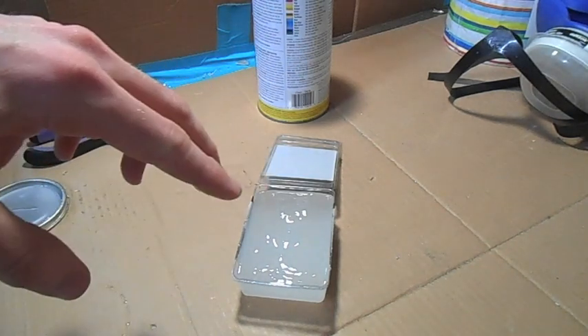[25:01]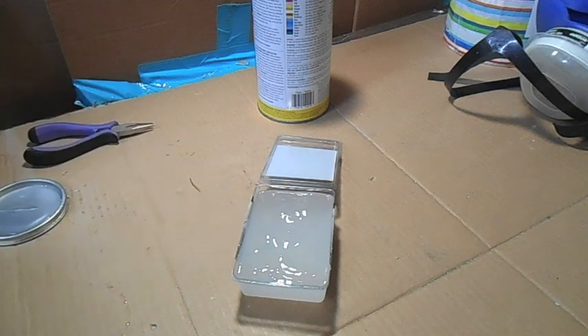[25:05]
Alright, so now we have our first coating of Plastidip, and I'm going to hang this up somewhere to dry. What you can do is you can allow this to cure for about 30 minutes, I believe. Let me double check on the instructions here. Yeah, 30 minutes. So you can allow this to cure for 30 minutes, and then you can do a second coat to make the Plastidip thicker and more durable.
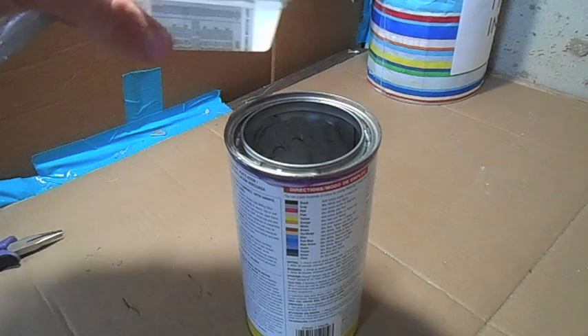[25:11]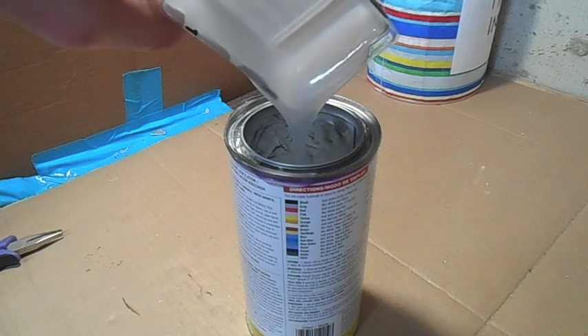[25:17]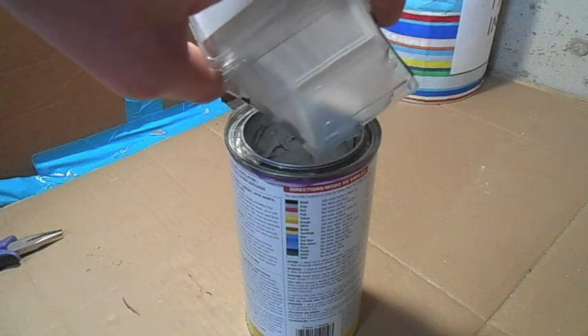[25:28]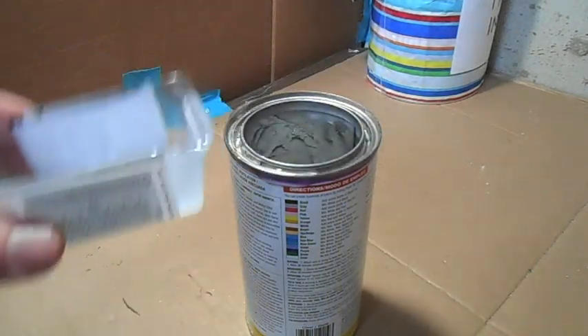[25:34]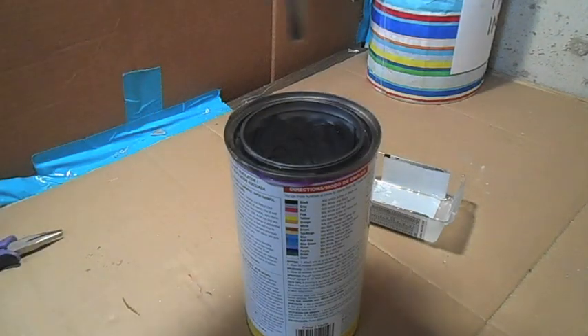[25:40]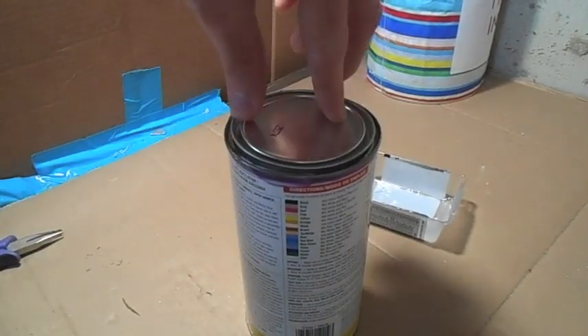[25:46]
Okay, so the last thing I'm going to do is I'm just going to take and pour the excess back into the can and let this drain off. That way you can get as many uses out of your can of Plastidip as possible. Let's get some of the excess off of here. Okay, there we go. And then you want to throw this container out, throw it out outside, in your exterior garbage, so that you aren't getting fumes in your house. And then the thing to do to seal this up really nicely again is to just kind of tap around the perimeter with a hammer like you would a paint can.
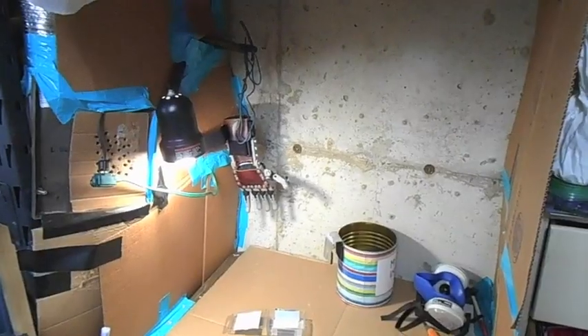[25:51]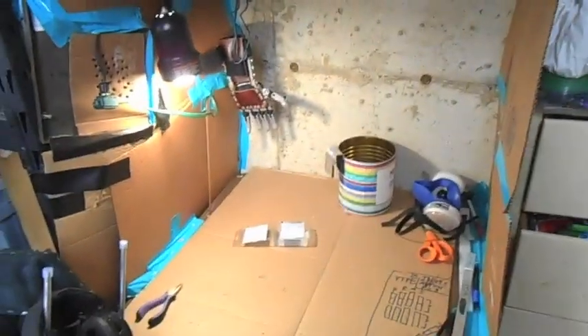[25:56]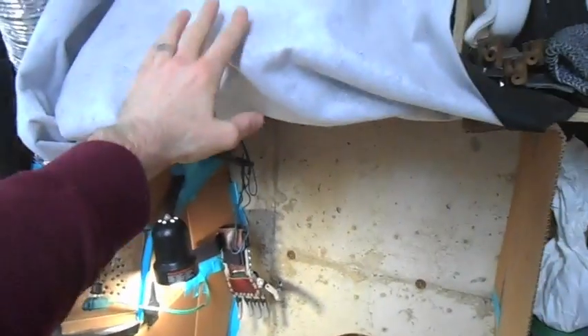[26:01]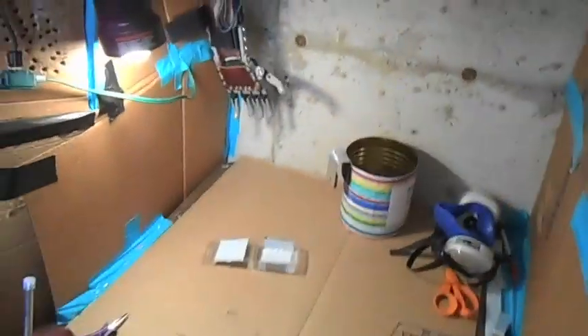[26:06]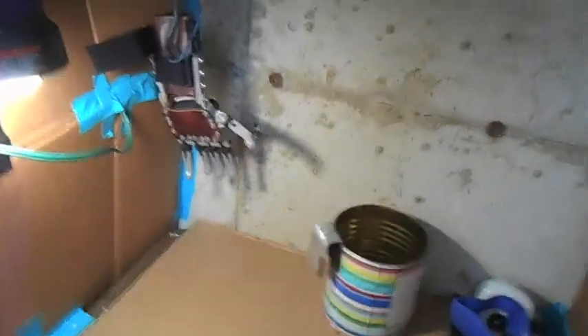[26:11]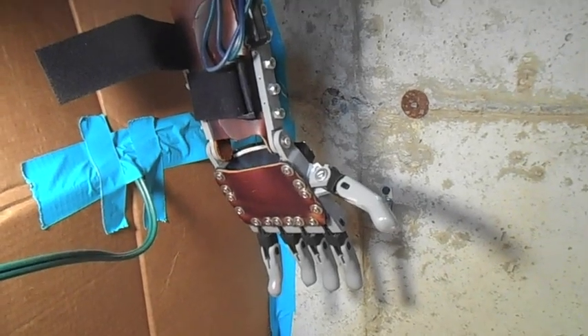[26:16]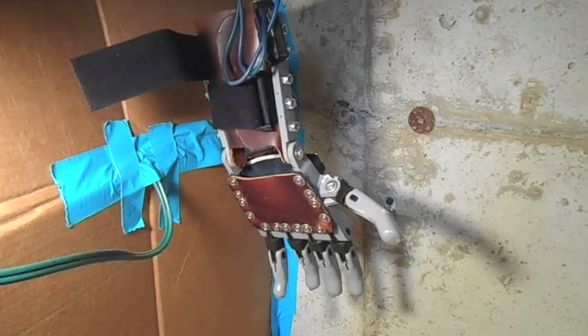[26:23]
Okay, so that was the final step. This is a little ventilation booth that I built into my garage. I've got a vent fan here, and some fabric I can lay down to enclose it. That way it pulls air in, and then there's ducting that takes the fumes outside. So that's what I'm going to let this dry in. And there we have the hand as it dries. And then after I do a second coat, it's going to be ready to send off to the recipient.
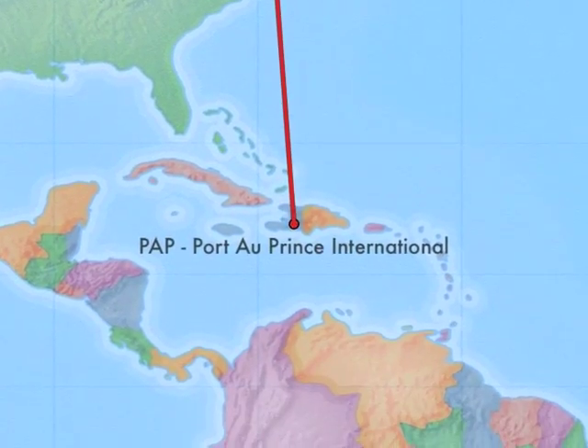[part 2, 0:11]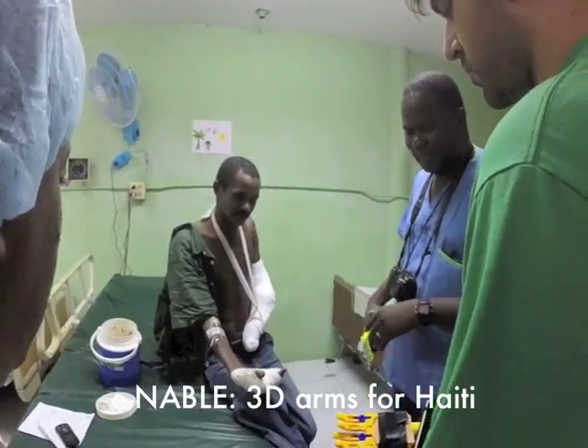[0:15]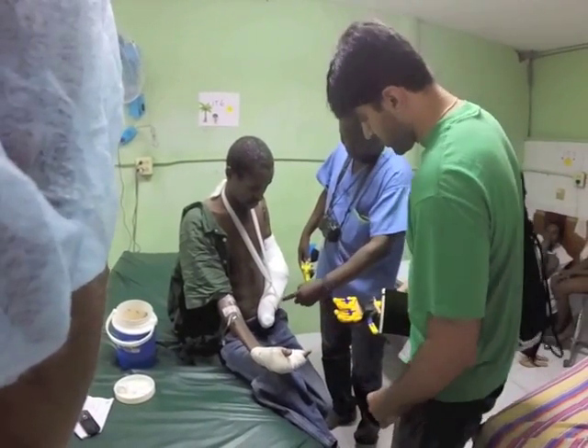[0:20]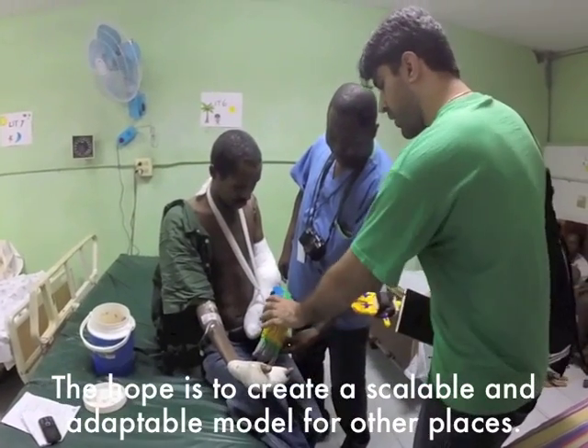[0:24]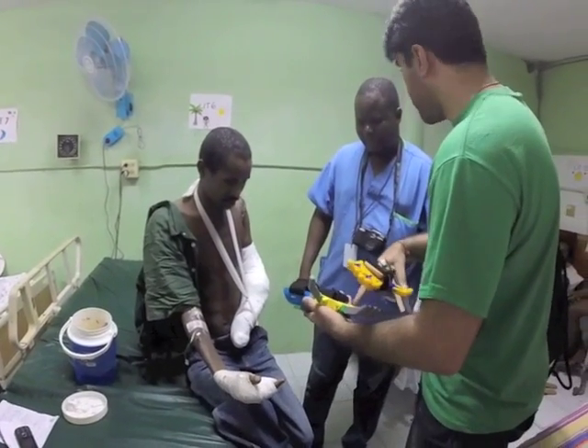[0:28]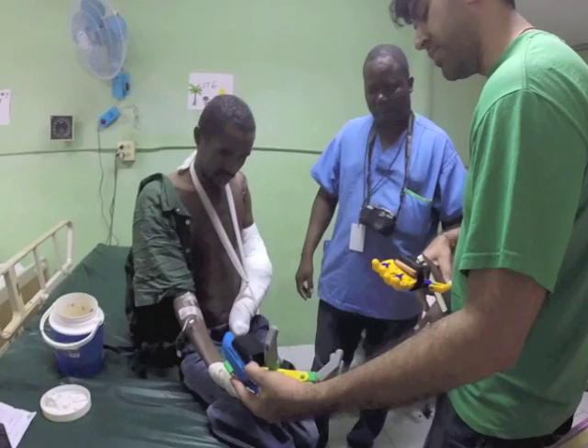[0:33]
A team of 6 e-NABLEs have been working since last summer on a project to produce and distribute 3D printed e-NABLE hands and arms around Haiti. The hope is to create a pilot that can be scaled and adapted to other developing areas. Over the course of 5 days in December, 2 team members, Dante and Mohit, took the first steps towards testing our concept on the ground in Haiti.
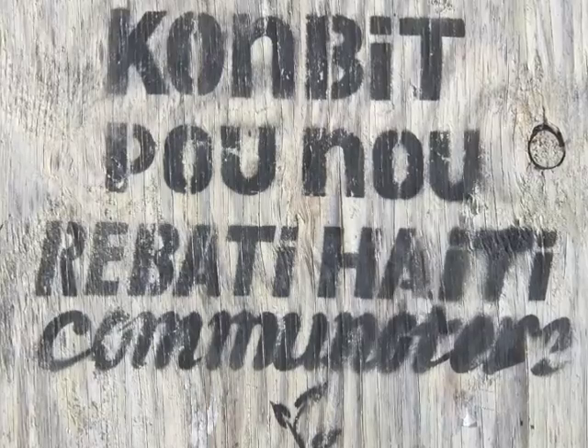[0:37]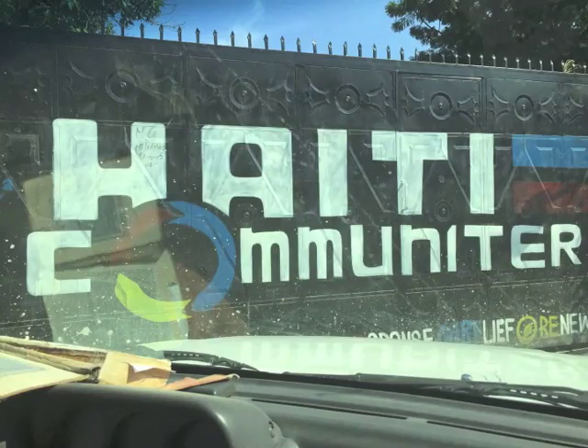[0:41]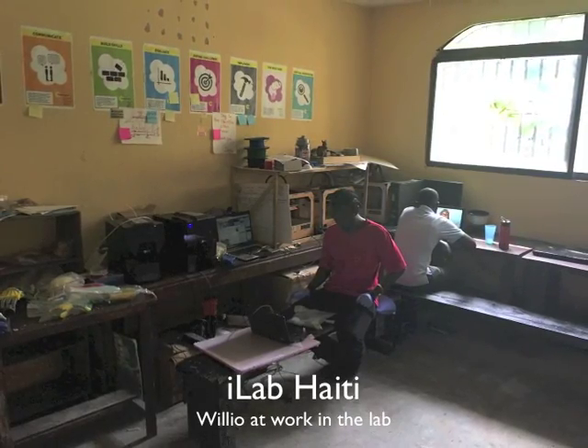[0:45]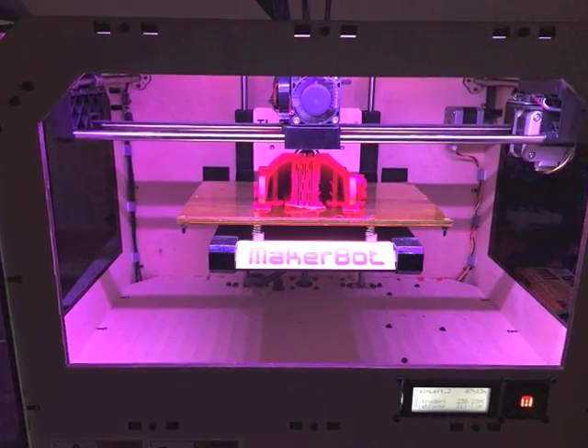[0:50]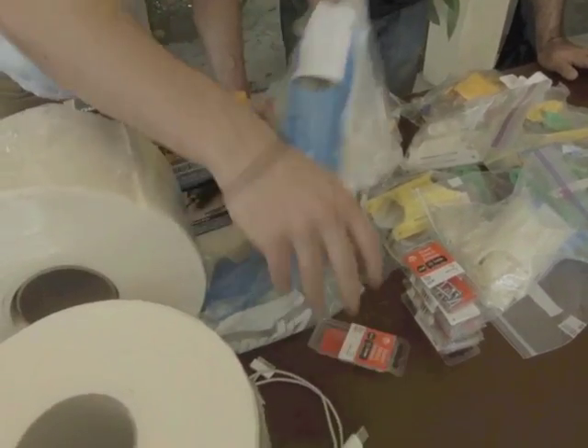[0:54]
The first stop was Haiti Communitaire, our potential manufacturing partner in Haiti. Haiti Communitaire is a unique collective that is a combination of makerspace, business incubator, and sustainability center dedicated to fostering collaboration between Haitian and international groups. The space also houses iLab, a 3D printing venture run by Desime Willio.
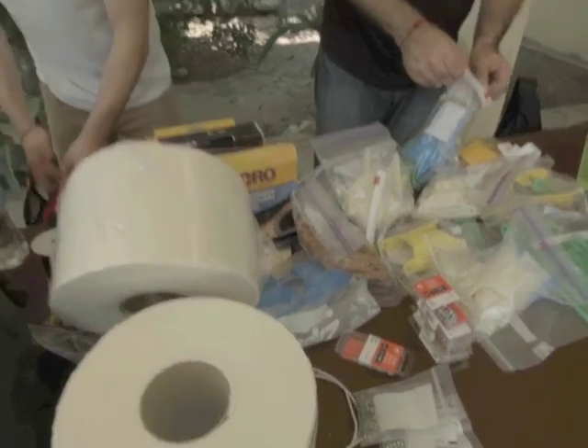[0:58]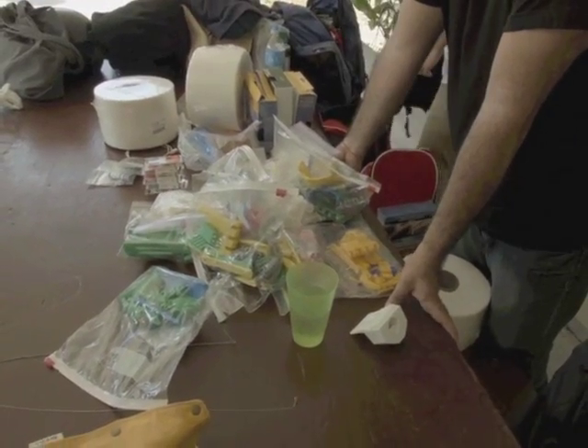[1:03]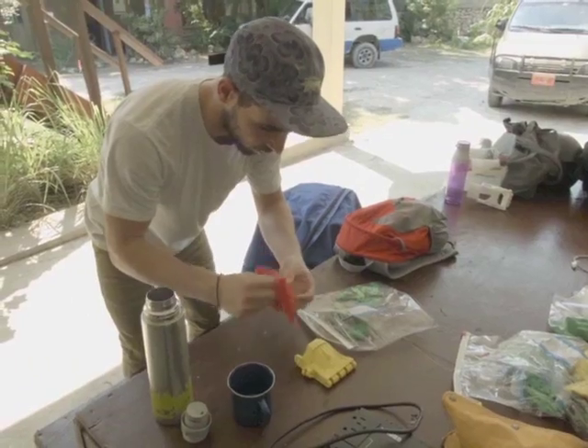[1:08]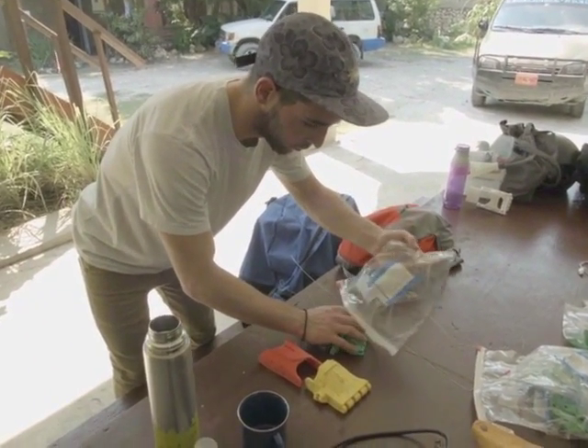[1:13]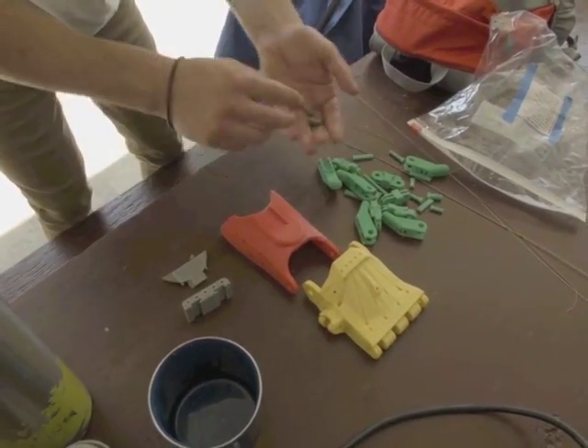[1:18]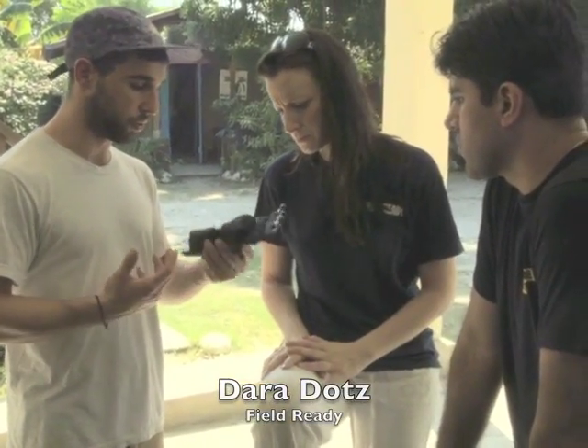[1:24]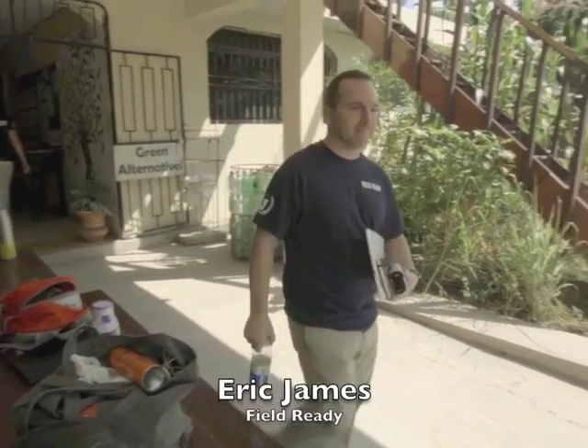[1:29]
Here, we unpacked components from more than 20 hands that were generously printed by e-NABLE volunteers. Kara Tanaka, leader of University of Southern California's 3D Printing Club, and Ara Bogosian of Design Intent CAD joined us for our trip. During the trip, we would train our Haitian colleagues in assembling the prosthetic hands, and also we'd demonstrate the printing and fitting processes. We also had the chance to meet with healthcare entrepreneurs of Field Ready, Dara Dotz, Mark Mellors, and Eric James, a team which uses 3D printing to deliver medical equipment on demand, such as umbilical cord clamps and IV bag hooks.
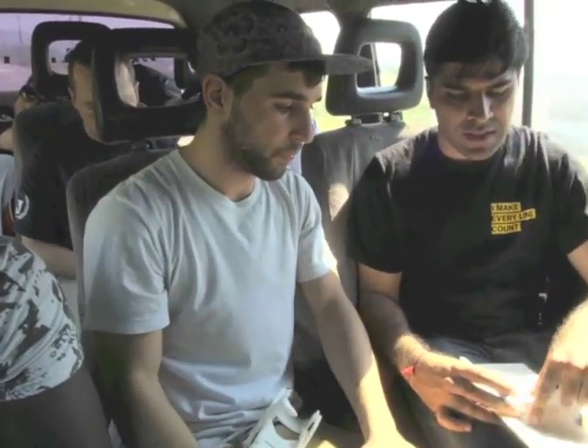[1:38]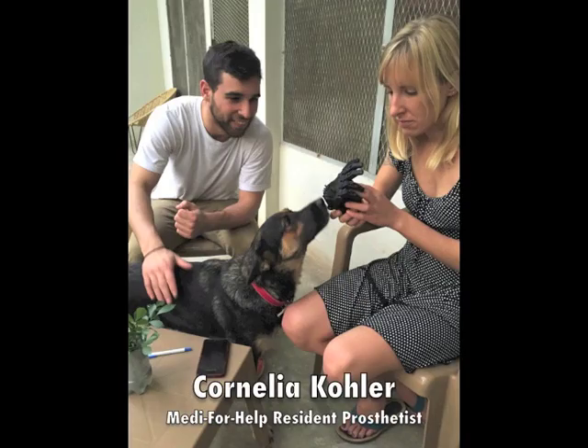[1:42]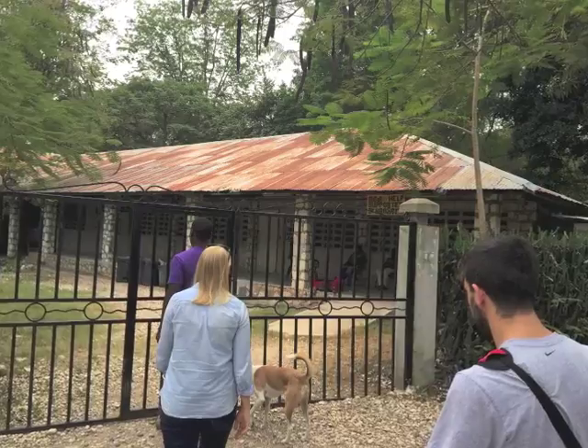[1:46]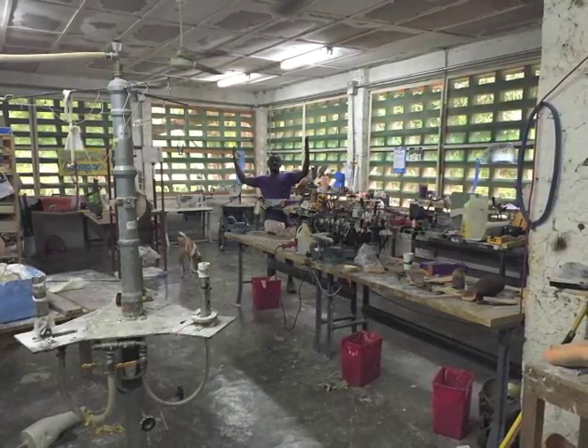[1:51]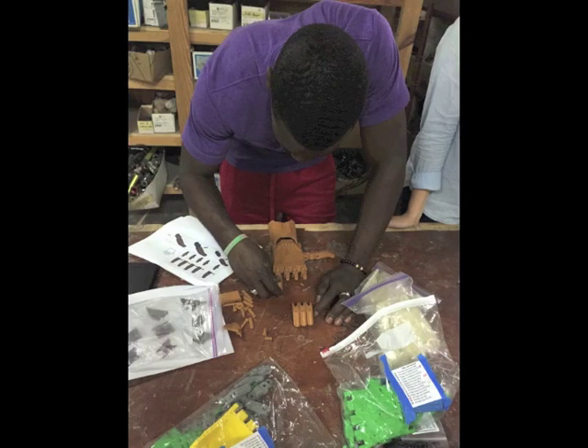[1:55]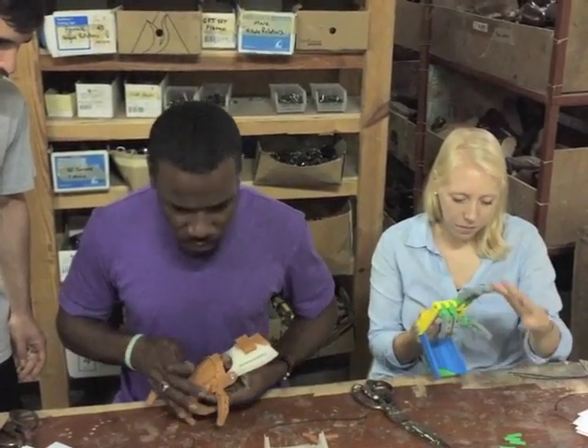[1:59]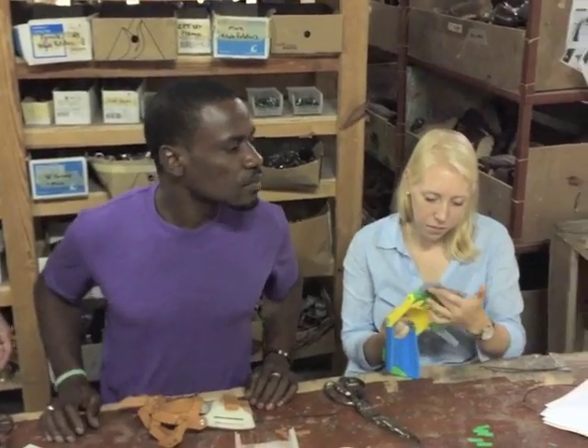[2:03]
From Haiti Communitaire, we headed over to Hospital Albert Schweitzer, aka HAS. We had been working with Cornelia Kohler, a resident prosthetist of HAS's Medi-For-Help clinic, for months, so we were excited to finally meet in person. Medi-For-Help, a nonprofit that fits hundreds of Haitians with conventional lower limb prosthetics, will now begin offering e-NABLE devices to patients. e-NABLE's 3D printed devices offer a quicker, cheaper alternative to conventional prosthetics.
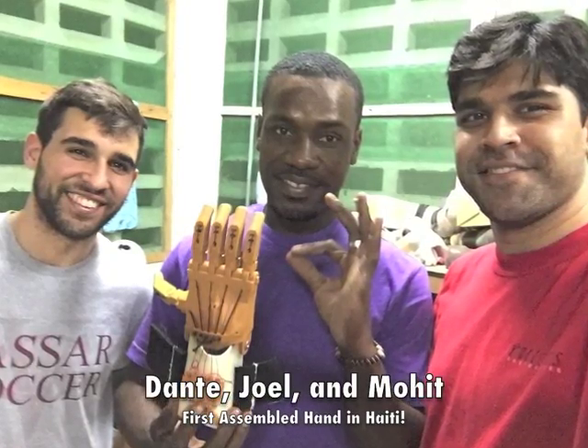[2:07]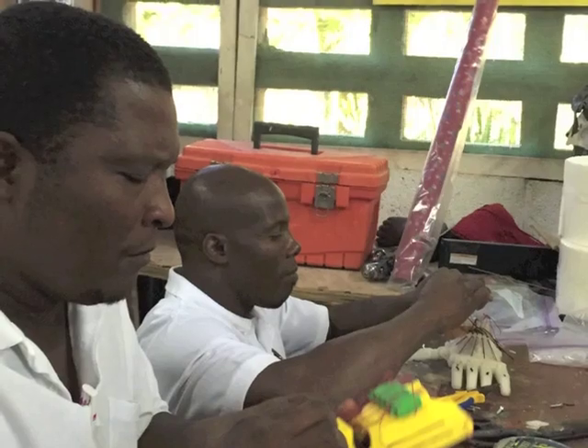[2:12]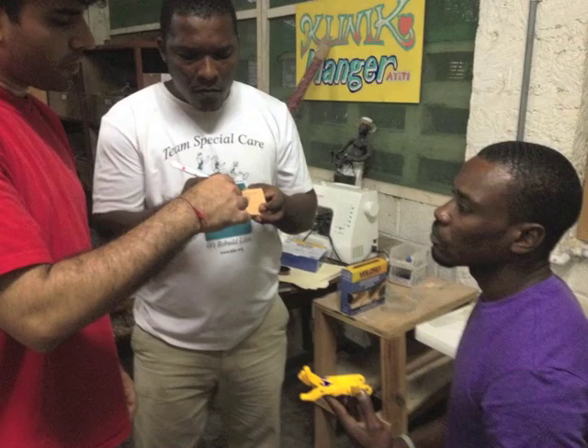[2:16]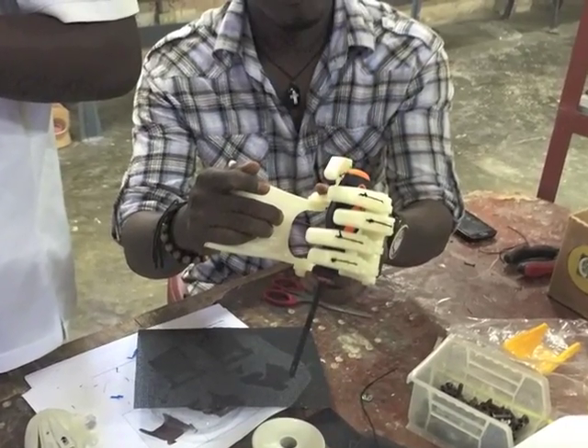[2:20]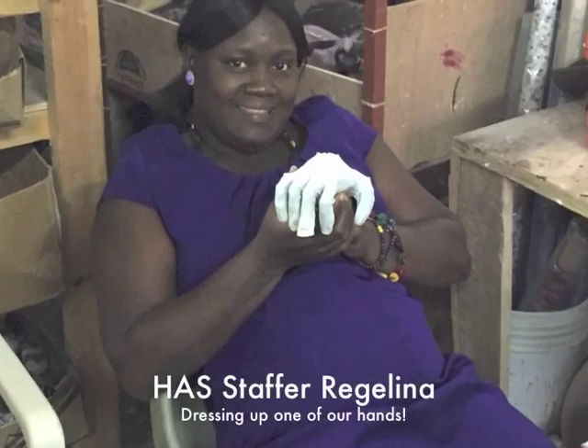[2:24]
With the help of e-NABLEs, the clinical staff assembled several hands and soon were teaching each other to accelerate the process. A key long-term goal of the e-NABLE Haiti project is to provide Medi-For-Help with a capacity to size, print, assemble, and fit devices on site, and to have Haiti Communitaire assist with repairs and technical support.
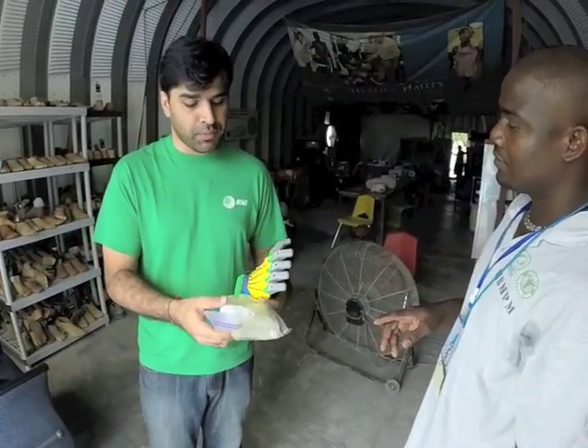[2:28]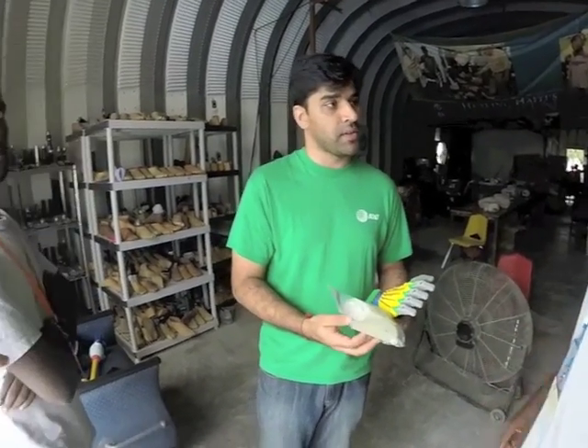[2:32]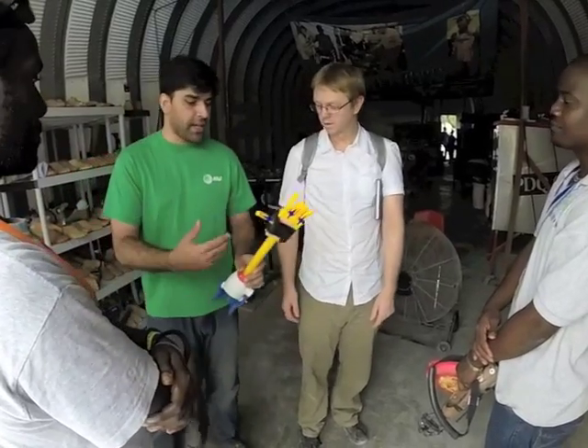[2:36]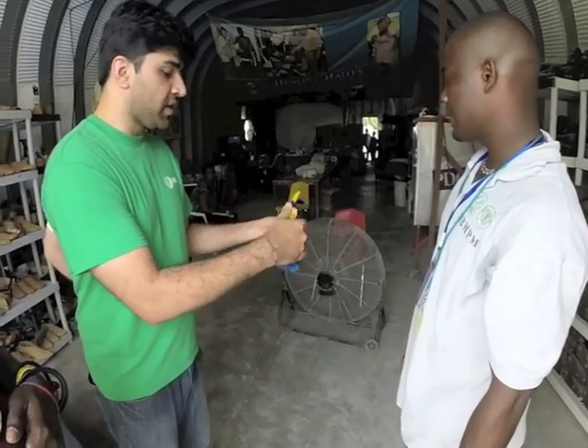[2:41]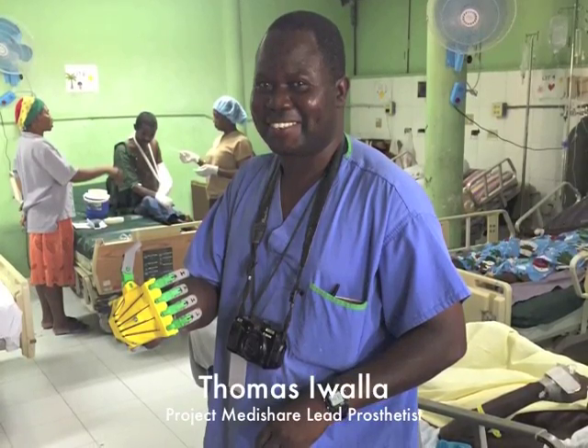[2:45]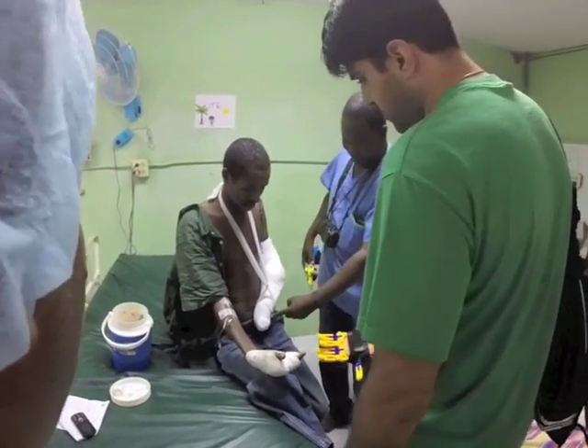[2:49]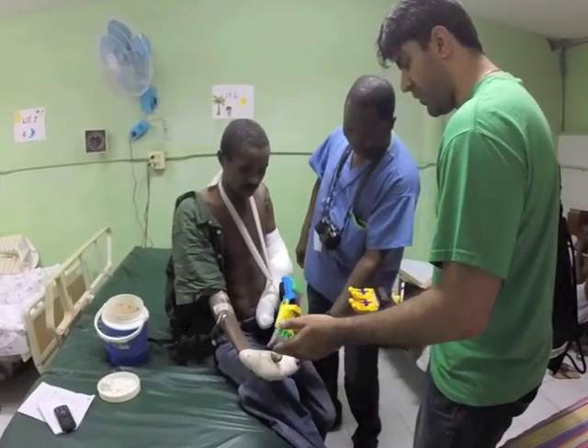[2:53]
Bernard Mevs Hospital, an important critical care hospital in Haiti and another partner hospital for e-NABLE, is the site of a prosthetics clinic run by Project Medishare. e-NABLE and Willio visited the site and had a chance to once again demonstrate our devices. Here, the team met with Thomas Iwalla, a prosthetist who came to Haiti from Sudan after the earthquake and has never left. Thomas was enthusiastic about the hands, carrying it around with him everywhere and showing it to the staff.
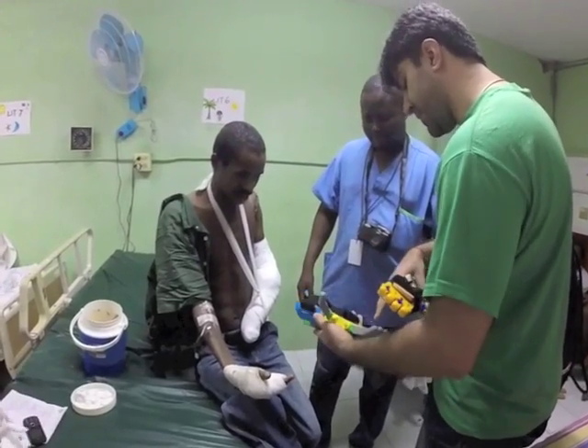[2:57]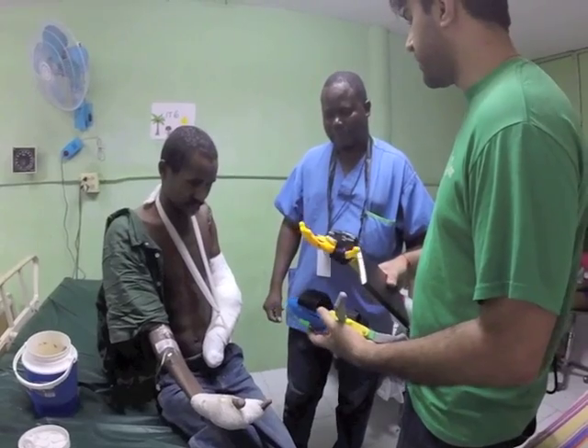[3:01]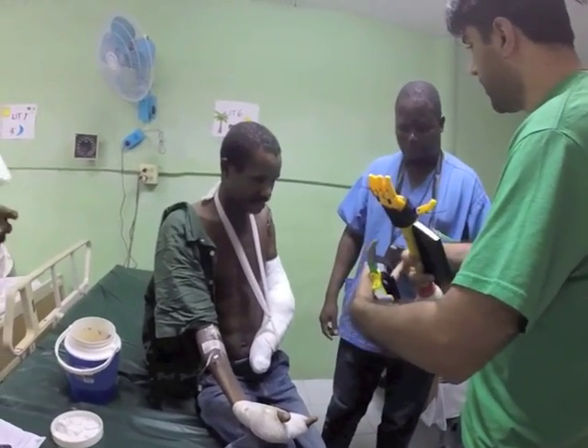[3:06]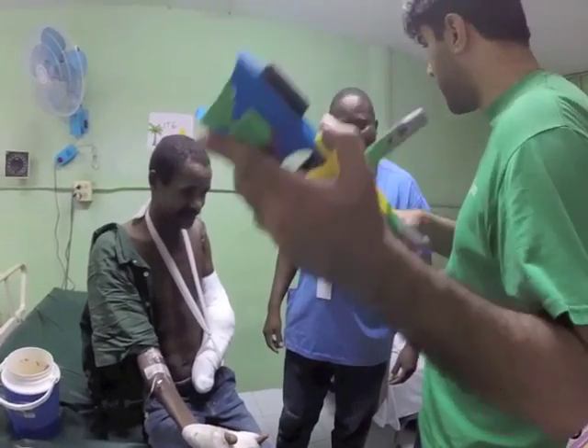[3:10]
Earlier that day, Tomek had just met a patient that will need some hand prosthetics after his wounds heal. He introduced us to the gentleman and we had an opportunity to ask him questions on whether he thinks he would use a device like this, and if his appearance mattered. It was encouraging to hear that he would use an e-NABLE device and he didn't care much for the appearance as long as it was functional.
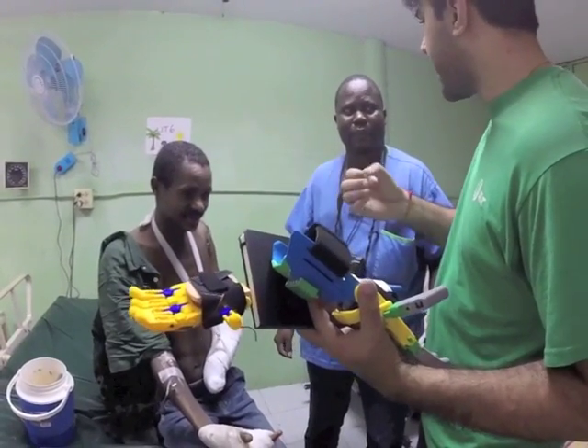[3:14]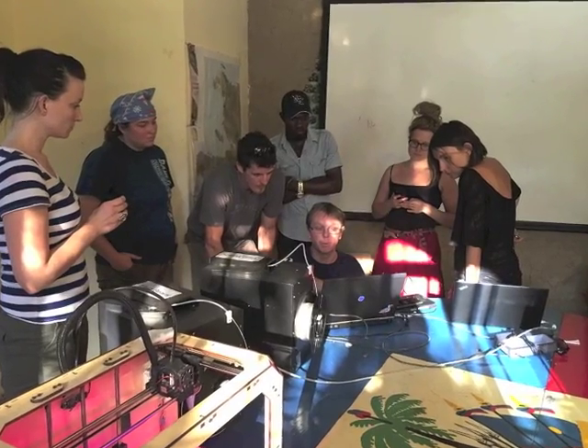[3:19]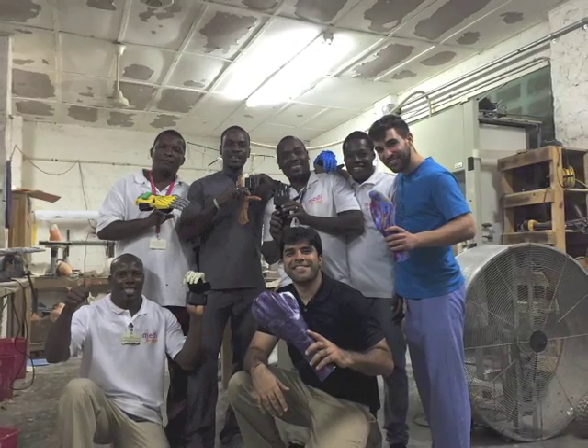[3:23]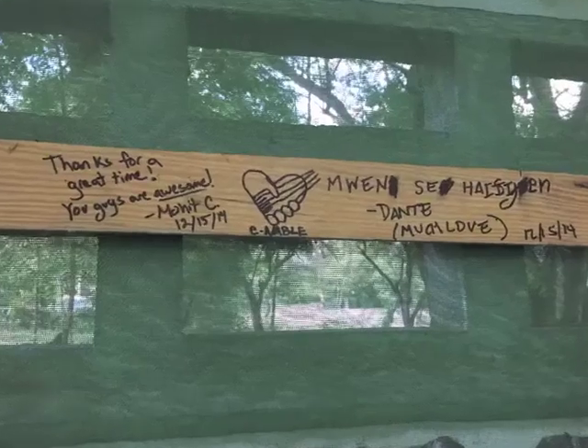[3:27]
We had such a remarkable time during this trip meeting such amazing people. Their drive, compassion, and good nature are why we are encouraged about this pilot's progress. Thank you all for your support. We can't wait to return to Haiti and start the next phase of this project.
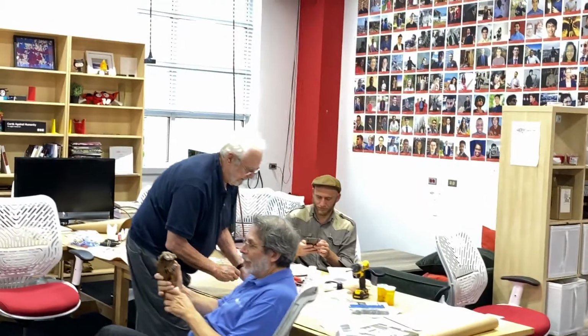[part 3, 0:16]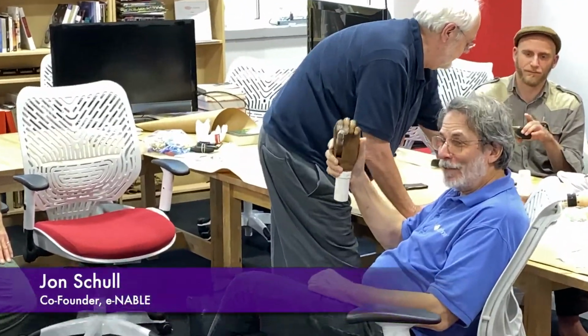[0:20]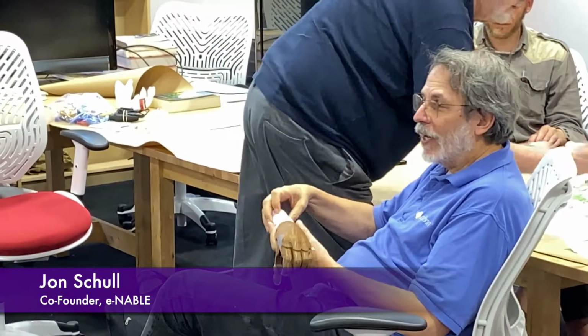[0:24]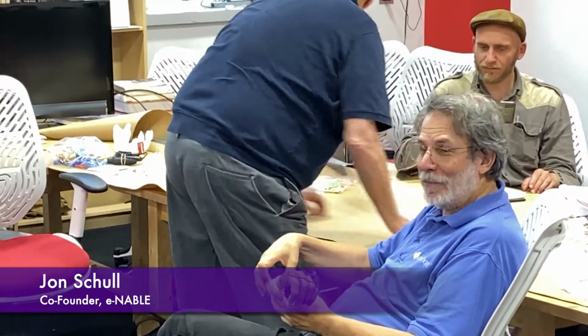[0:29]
One button, and it will open and close the thumb so that you can do a number of things. Inside is one 9.5-volt battery, a piece of plastic, and 5 paper clips. Really simple. The electronics, or the electricity, is built into the chassis.
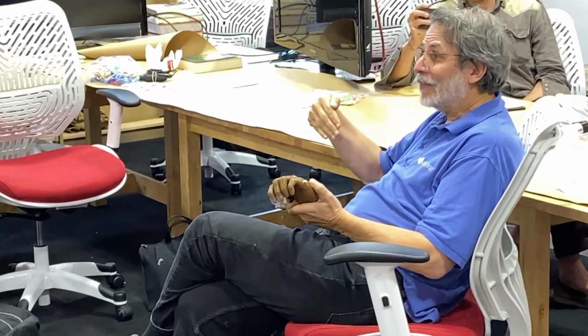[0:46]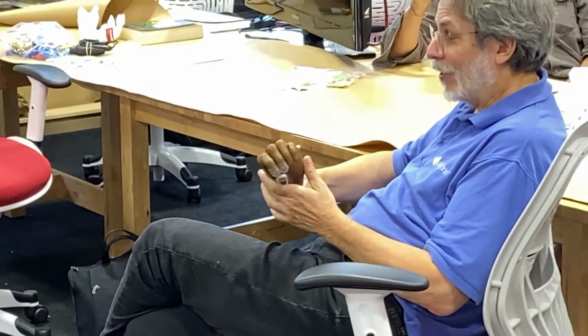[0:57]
We have 16 chassis kits, 45 minutes from here, on their way in. So we have time for an assembly workshop sometime in the next 48 hours if people are interested. I think it's a really good science project. It's got a little bit of logic, a little bit of electronics, and so on.
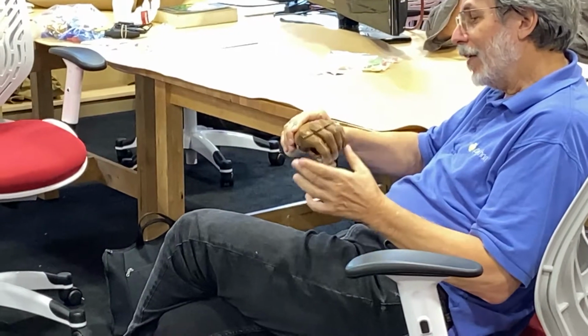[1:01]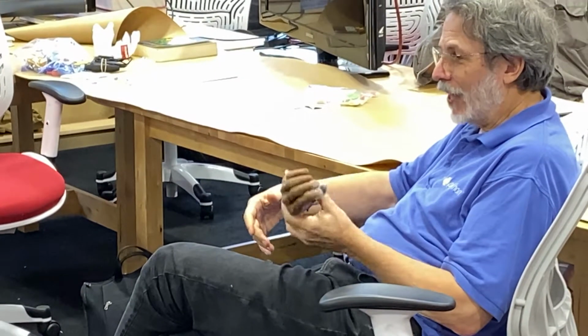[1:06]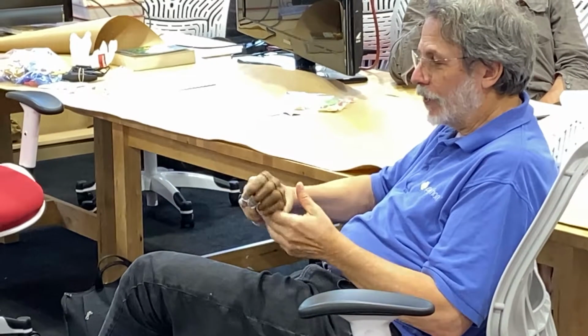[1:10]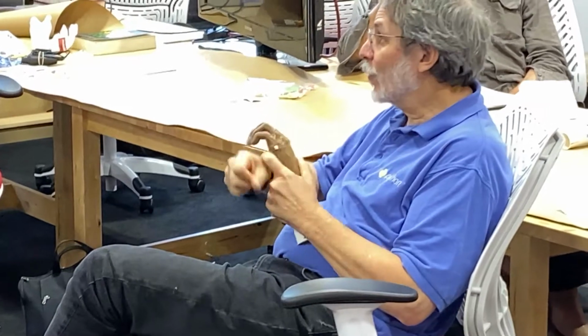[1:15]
But we also think we've got a device which is hitting a funny sweet spot in being somewhat anthropomorphic, self-contained, lightweight, and, as Skip will explain, particularly good if you don't have a good hand to put things into your gripper. So Skip is going to talk about the background of this, the logic of it, and take it apart. If we have time, I might show off the paper clips and the batteries and the assembly process, and that will be it.
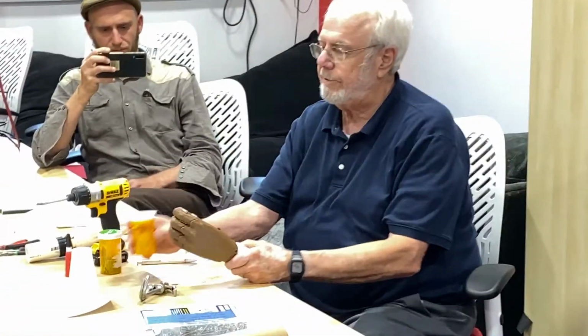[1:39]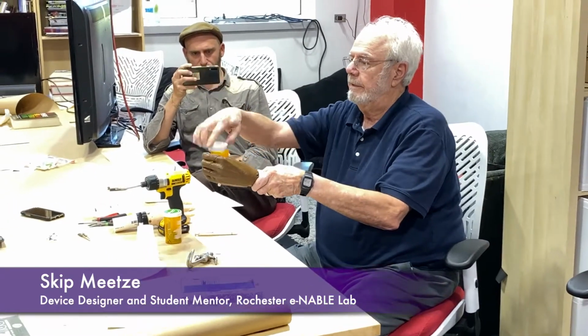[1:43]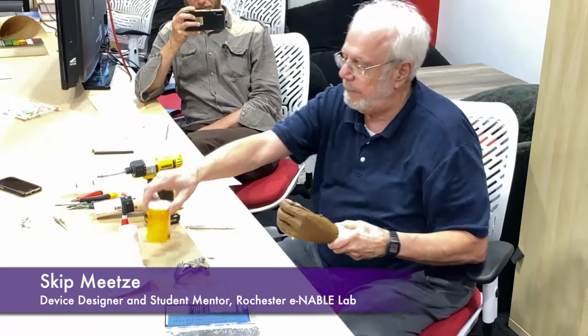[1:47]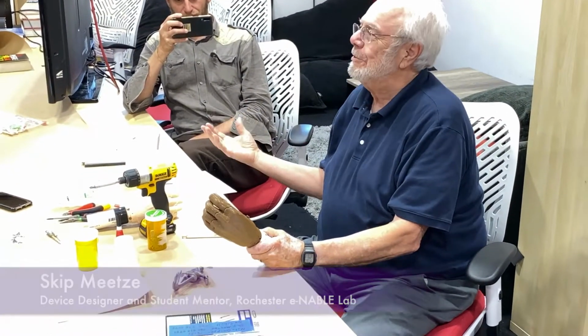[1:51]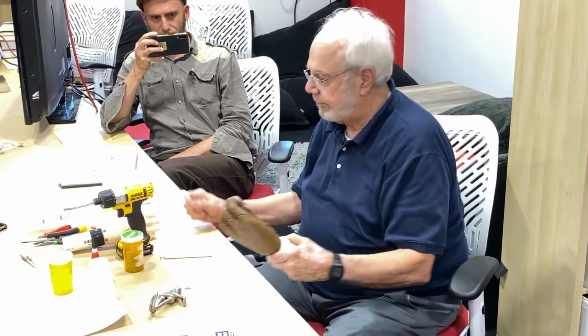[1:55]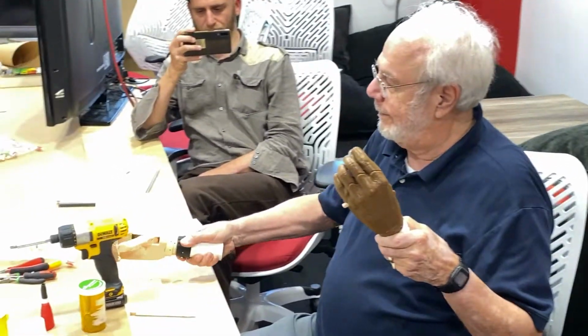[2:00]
Okay. Mr. Skip. So you've all seen a gripper hand that is a passive prehensor that can hold things that you place into the grip with your other hand. And we were interested in helping people who don't have another hand. So bilateral amputees need some mechanism.
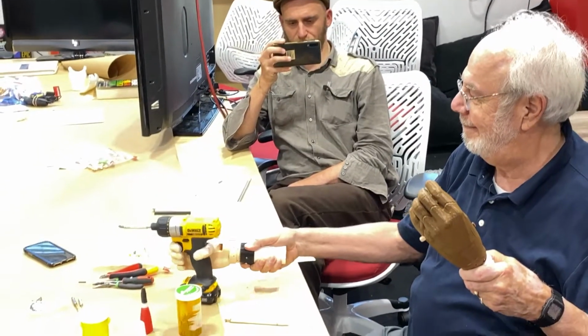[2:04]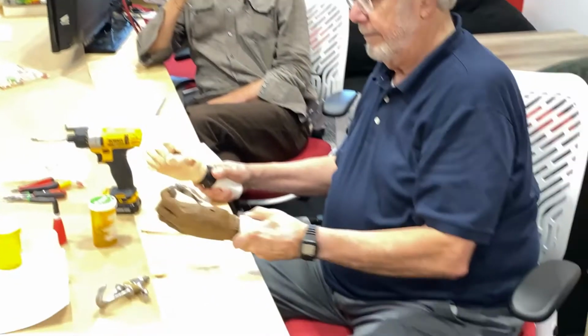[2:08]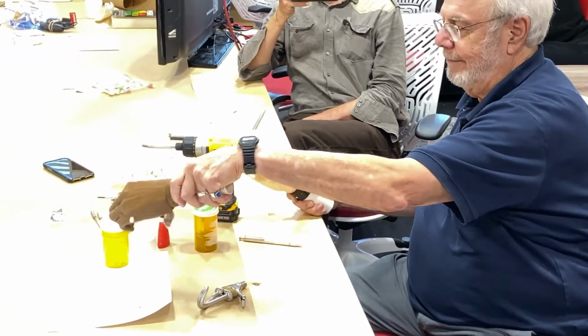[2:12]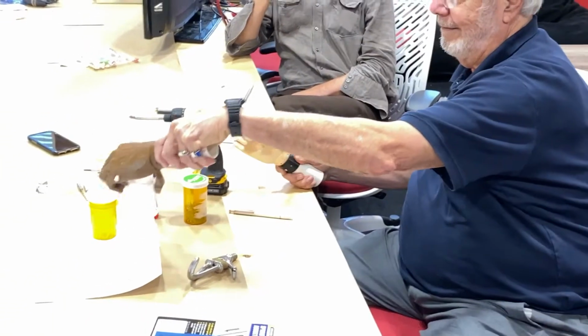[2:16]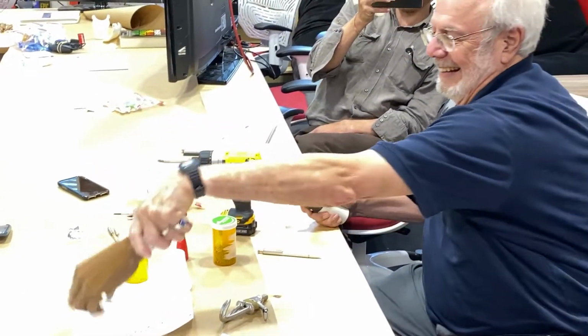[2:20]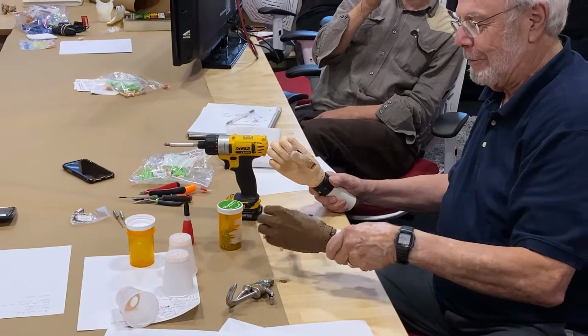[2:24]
So I've got a left and a right. Oh, this one goes fast. We had a little girl who wanted to stack cups. That was her big ambition when we said, what do you want from your arm? So this cup stacking takes practice. That'll be the challenge tomorrow, so you can learn to stack cups.
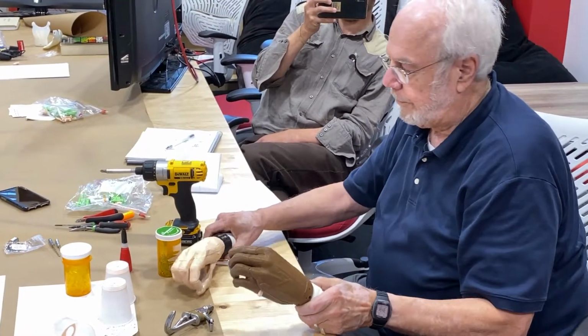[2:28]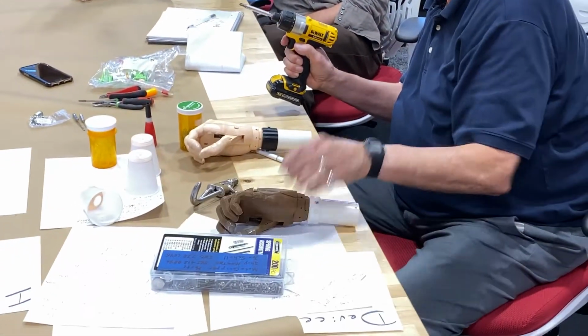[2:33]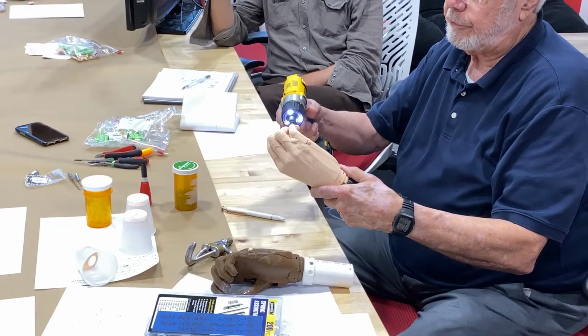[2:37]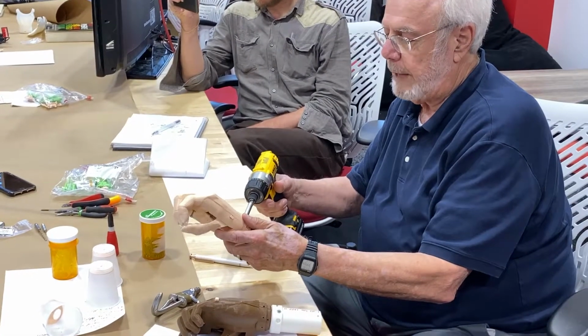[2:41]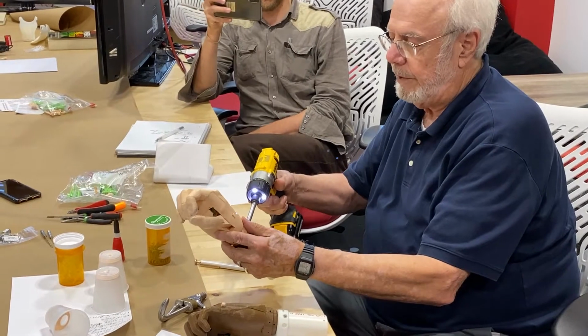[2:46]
But I wanted to show you what's inside. I'll take this one. It's held together with screws. We played with holding it together with just snap-together features, but decided that we're not ready with that yet. It's not quite reliable enough.
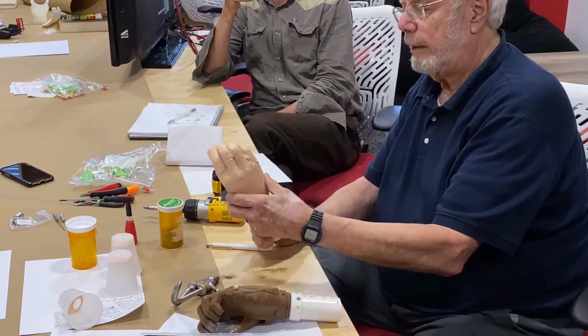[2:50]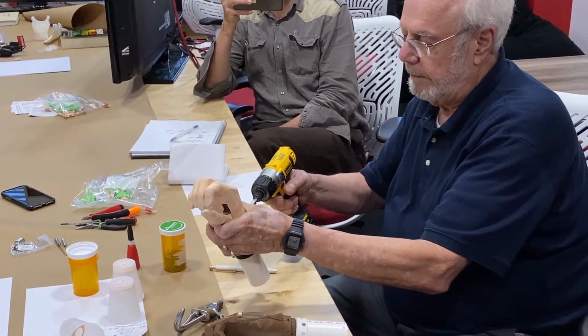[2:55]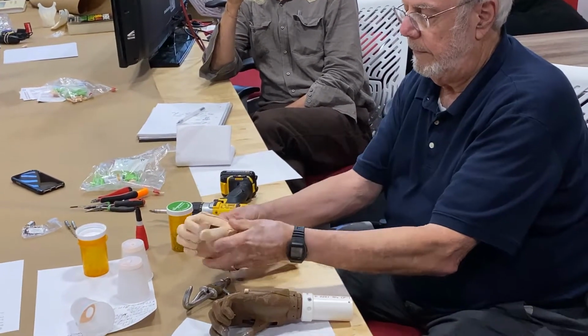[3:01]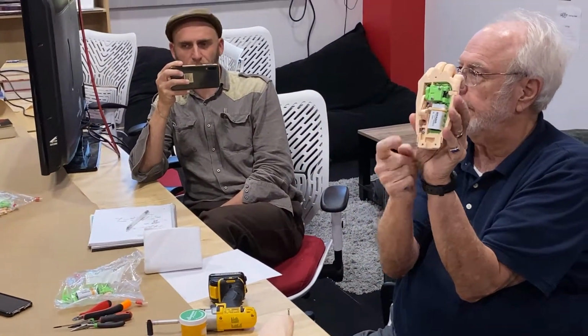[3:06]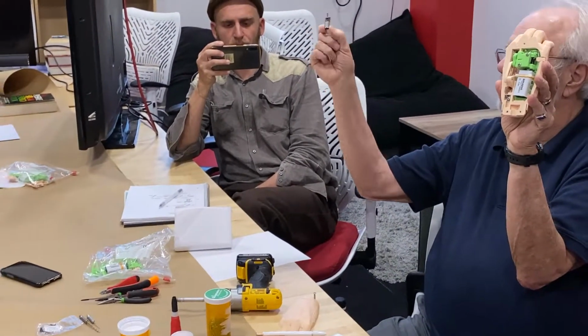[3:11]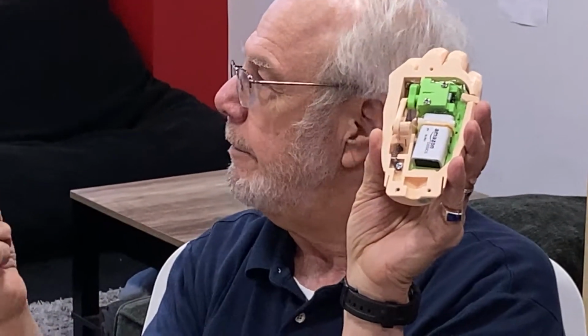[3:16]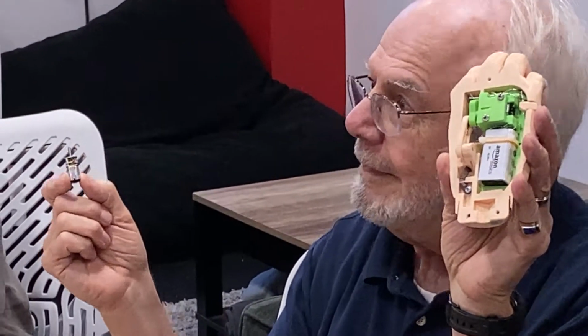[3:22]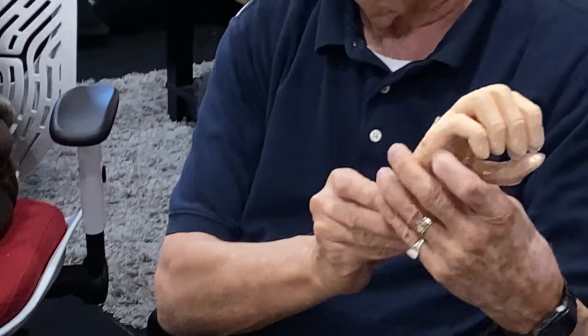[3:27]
But on the inside, and I'll pass this around, is something that looks a lot like a regular gripper, with 2 halves. And there's a regular 9-volt battery, a little gear motor from China that costs $12 if you want 2-day delivery from Amazon Prime. If you're willing to take the slow boat from China, it's $7. It comes in a month or less. And you can see how it works.
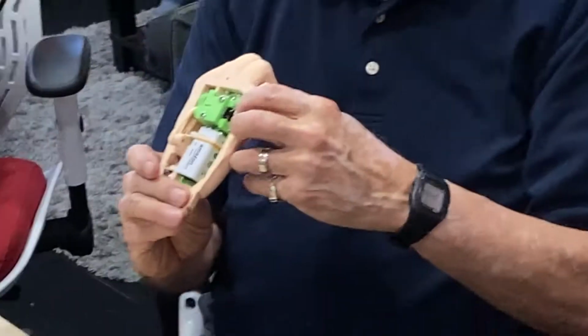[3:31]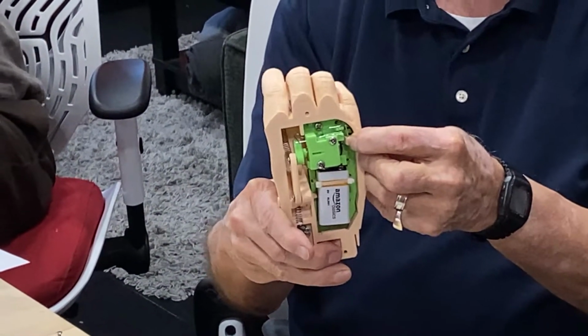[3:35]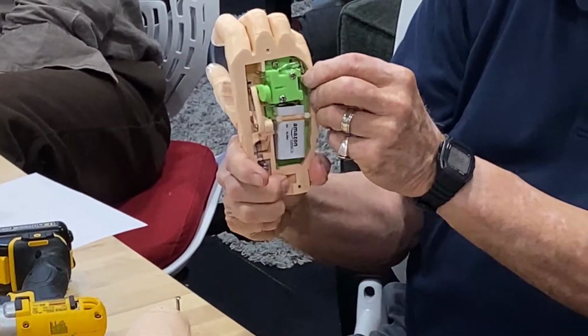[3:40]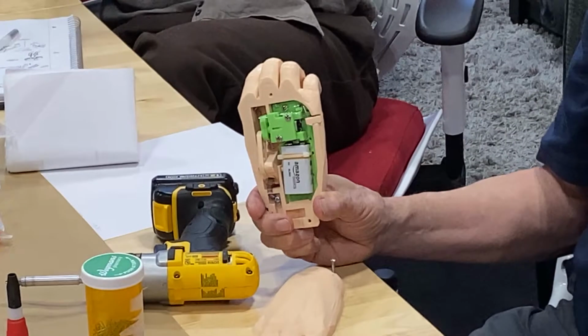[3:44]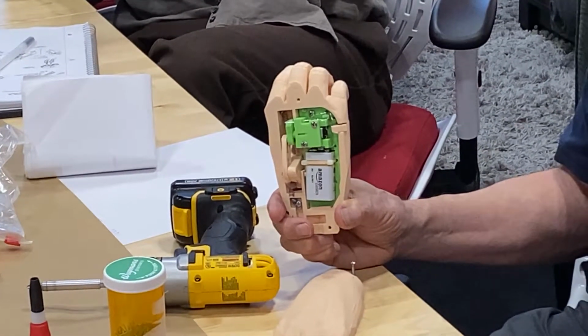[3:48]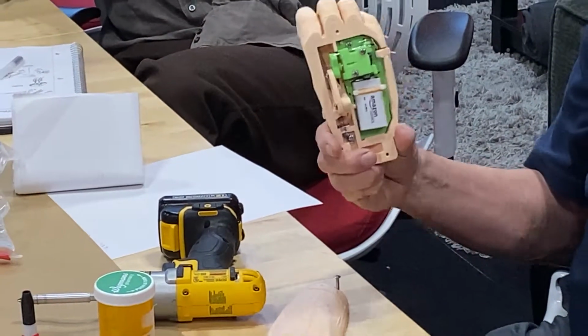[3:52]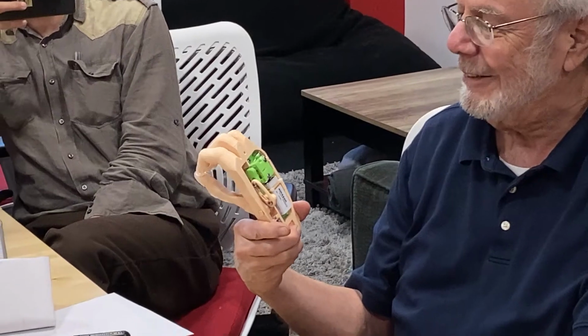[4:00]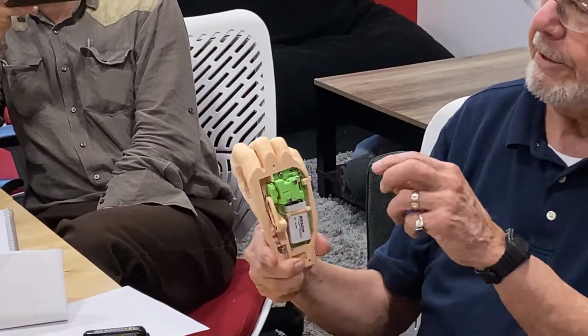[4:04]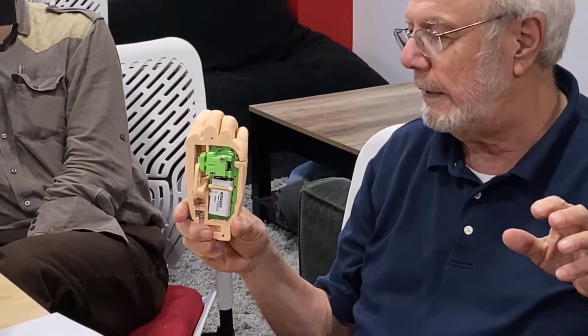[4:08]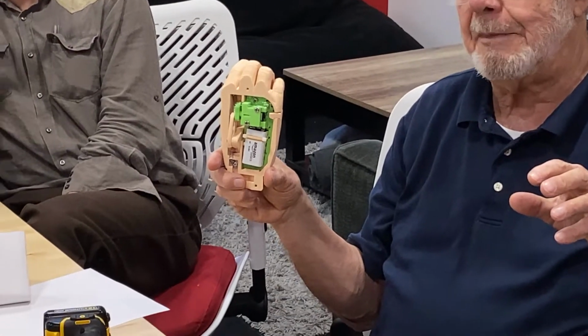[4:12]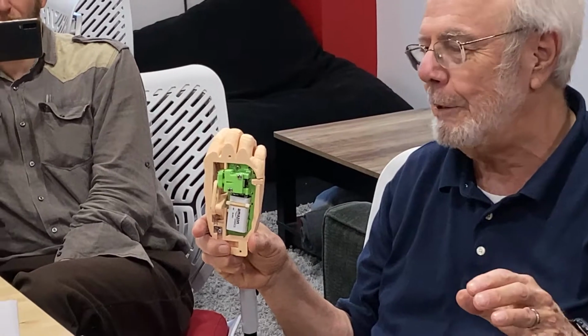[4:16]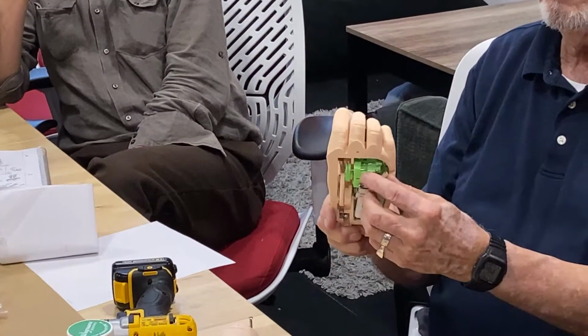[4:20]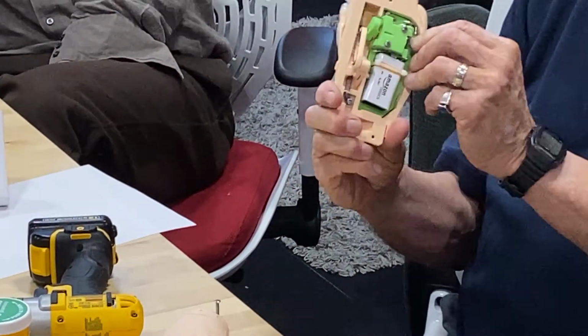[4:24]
You push the button, and this paper clip makes contact with another paper clip, and all the electrical connections are made with the paper clips. So a guy in California, Doug Bittner, came up with this basic architecture, and we've been playing with it for almost a year now to get it to this point, and we're loving it. But it's basically 2 switches, and we were using micro switches to begin with, and then we used a push button switch out of a flashlight, and I made some videos about that. And then we decided we could do it with just paper clips alone.
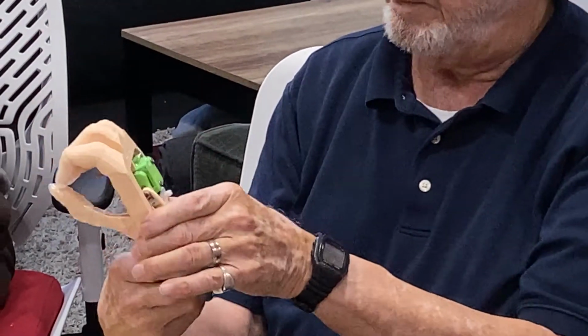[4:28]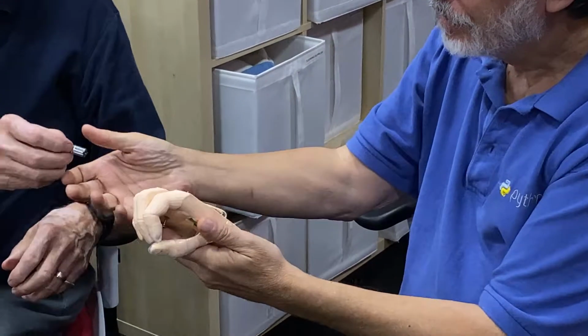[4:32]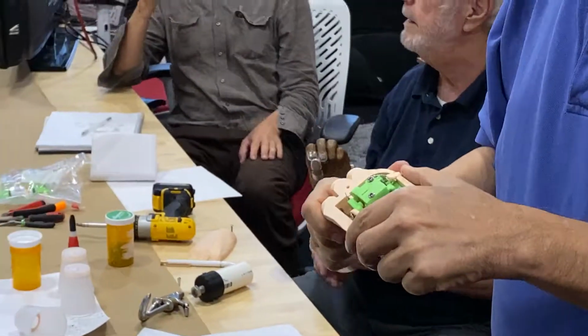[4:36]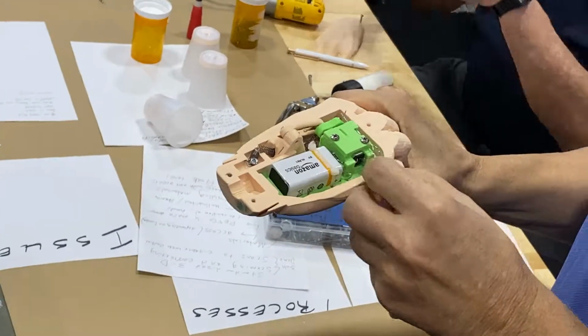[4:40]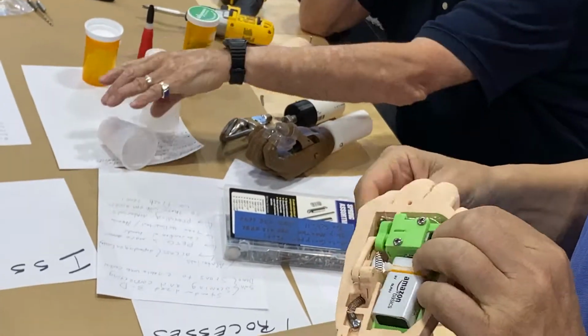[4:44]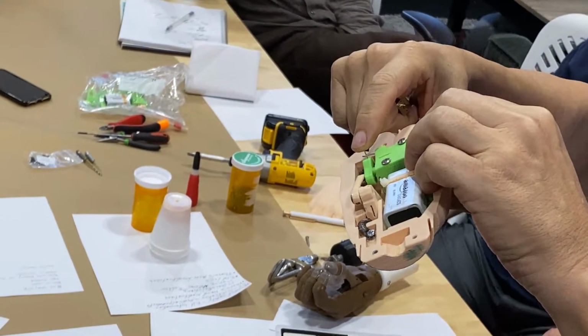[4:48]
And so I'd like to pass this around, or walk around with it, John, and let people see it up close. So let me just tell you what to look for. There's a cam which does 2 interesting things. One, of course, is it moves the thumb. The other is it comes around and pushes this little pole apart. The pole is part of the stay-on circuit.
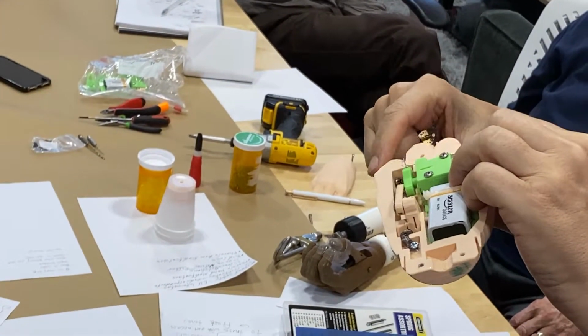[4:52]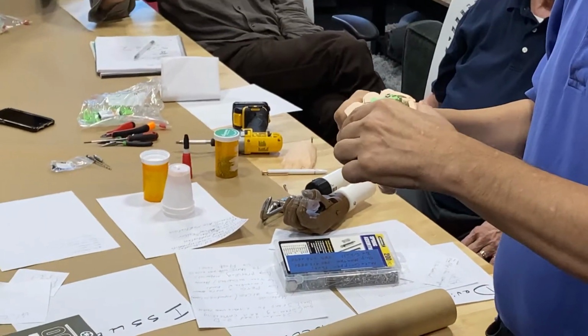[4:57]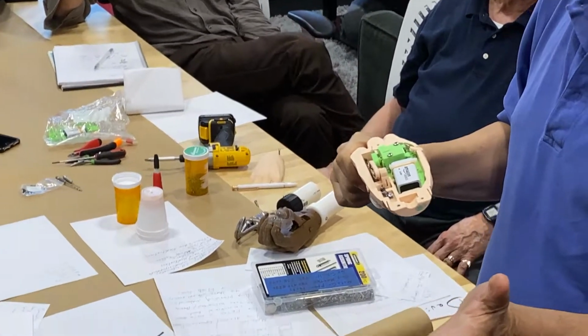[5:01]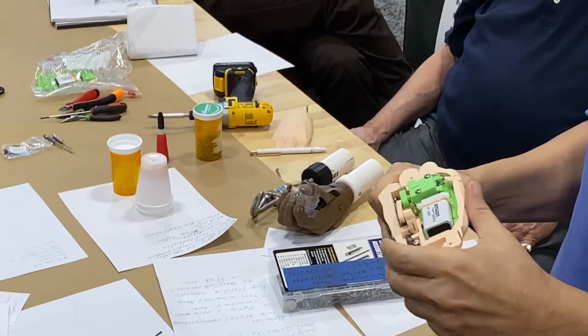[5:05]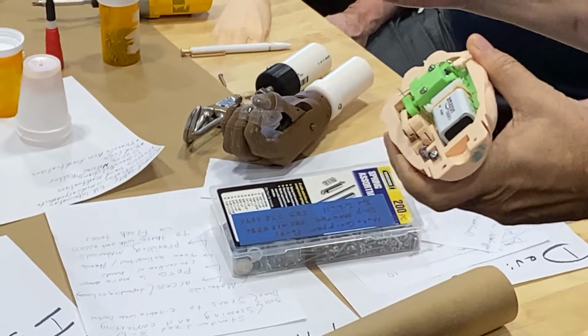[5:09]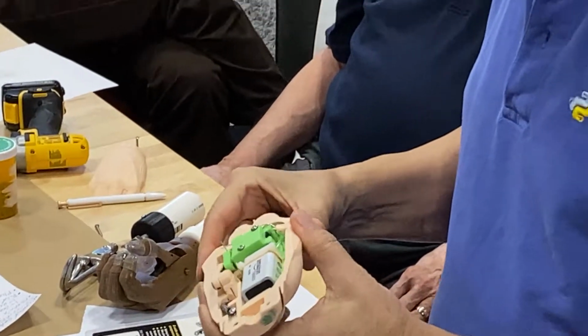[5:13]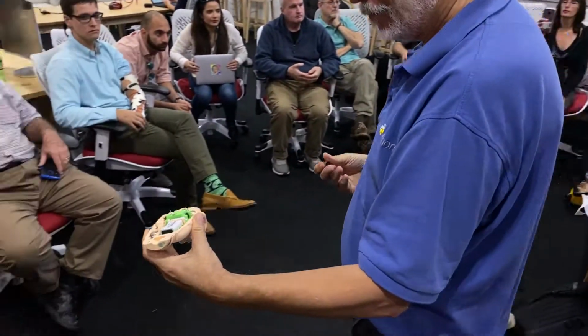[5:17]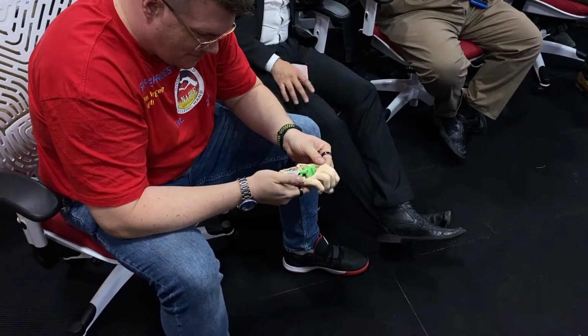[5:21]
So the magic, and you've got to think it through and watch it a few times, is that once you press the button, the cam allows the stay-on circuit to function. So the motor goes a full rotation until the cam hits the pole, tells stay-on to stay off, and it stops again. So there's a little logic switch built in, and you can play with it and see how it goes. No electronics, no micro switches, no soldering.
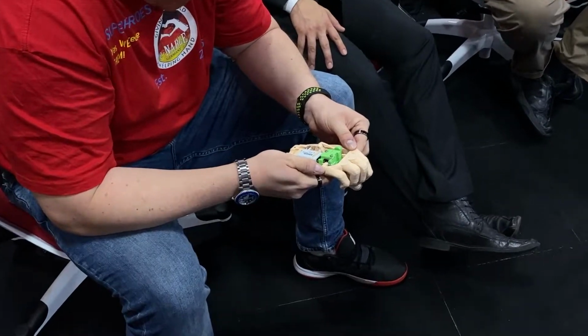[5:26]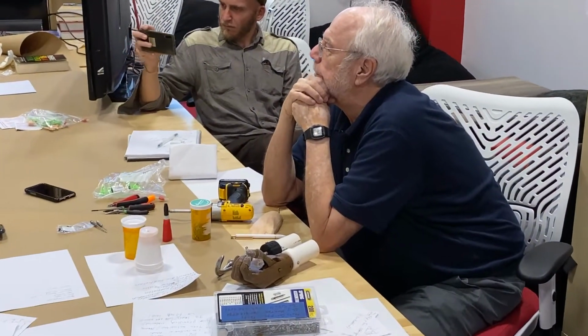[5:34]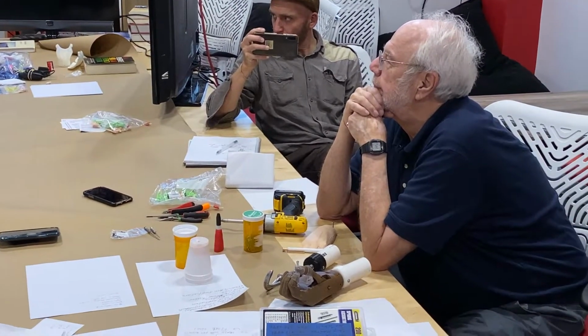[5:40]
What's the advantage of that over your previous version that had the flashlight circuit? It's a little cheaper and a little simpler. Do you have one of those as well? Yeah, I've got one of those too. Because that one looked pretty good when you showed it. This is like that, but because we're using a 9-volt battery, it's got more power and more duration than the AAA.
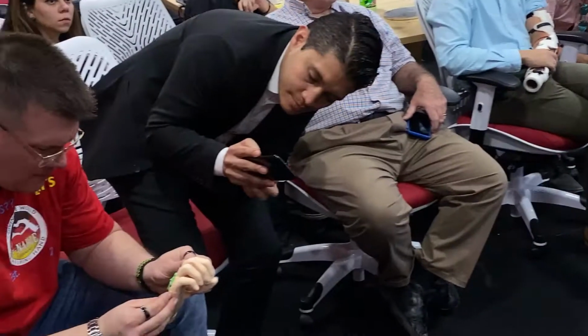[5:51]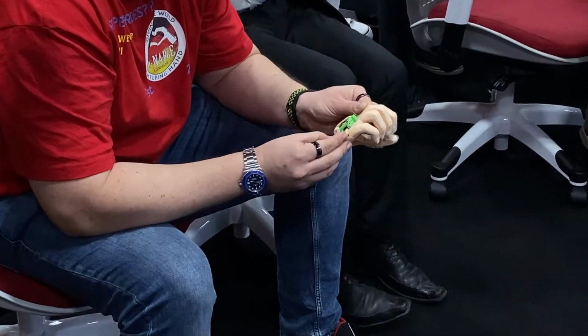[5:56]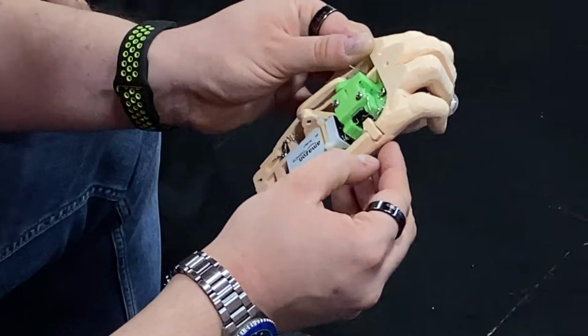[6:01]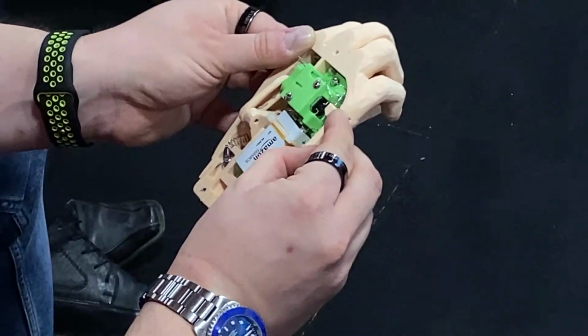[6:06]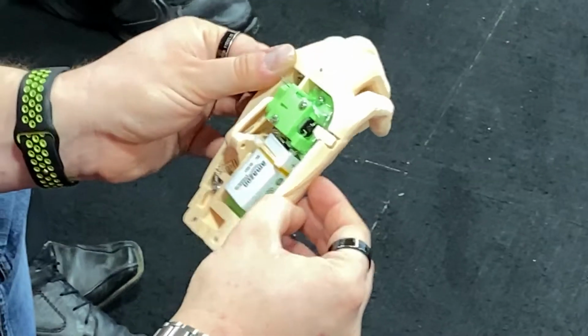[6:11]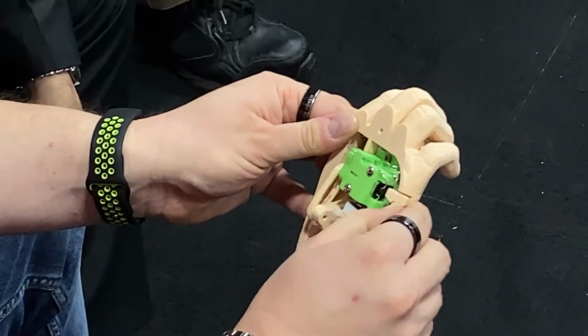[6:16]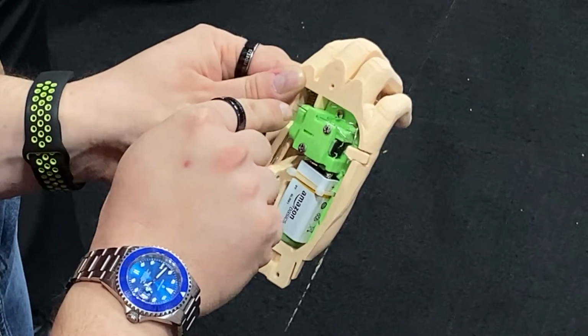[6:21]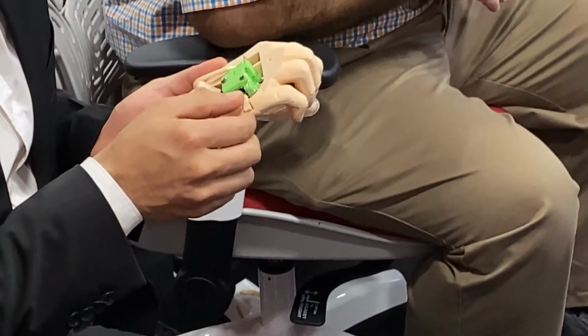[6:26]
The motor that we've been using is rated at 3 volts. So they're very tolerant to both voltages. You get your torque. Specified from 2 to 30 RPM for a 3 volt motor. Run it on 9 volt, and we get the performance. And these two devices, this circle, as long as it's closed, there's a closed circle down there, and now it will open again. Oh, yeah, that's pretty smart.
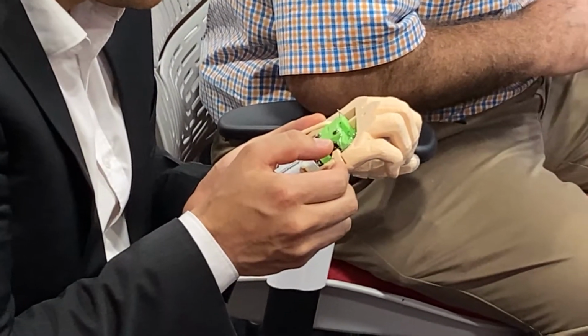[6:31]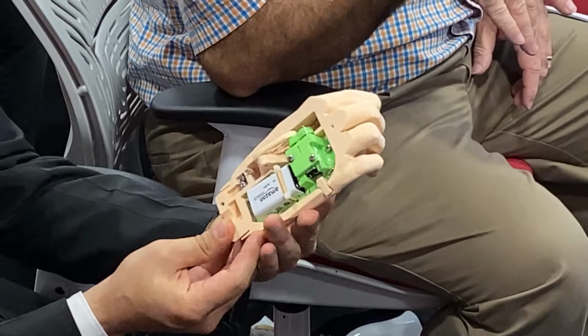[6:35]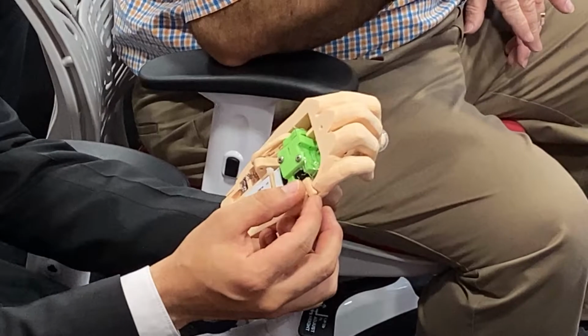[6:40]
And we're still experimenting. The spring that we're using, we can get from Amazon also. Or you can get it from Moto Gripper.
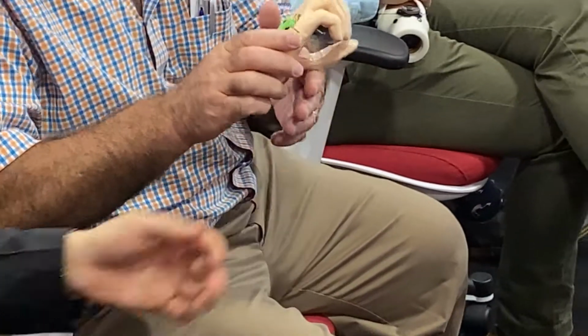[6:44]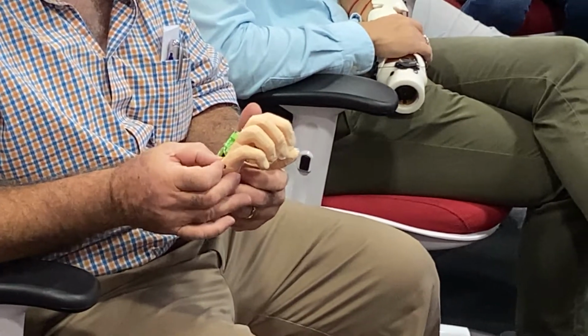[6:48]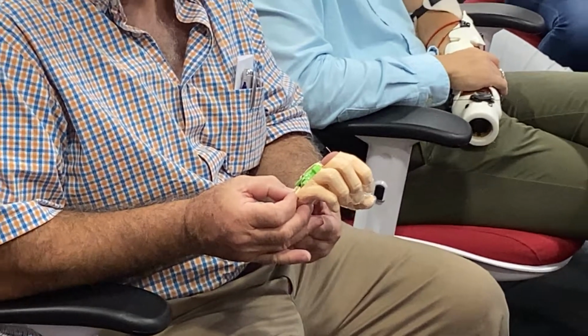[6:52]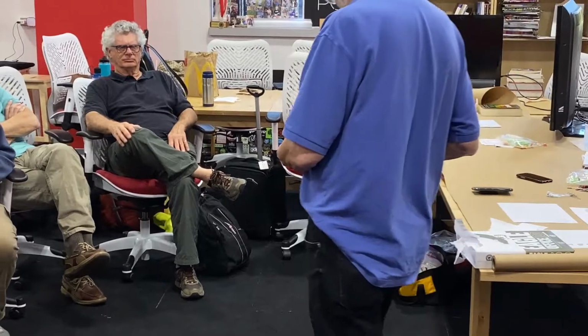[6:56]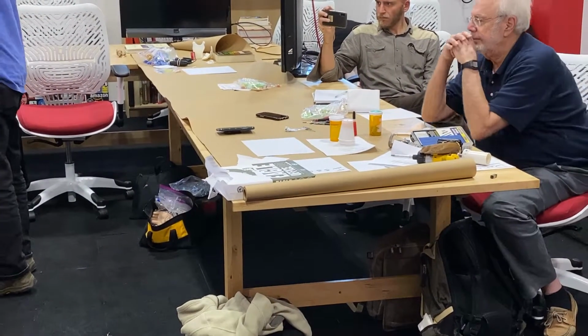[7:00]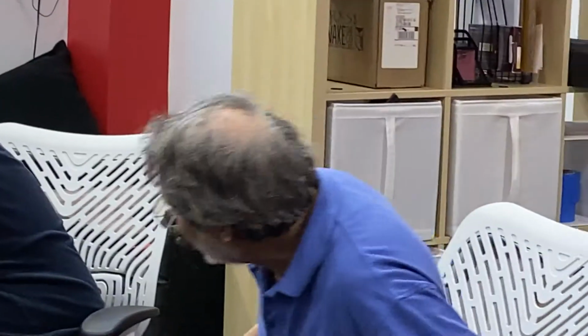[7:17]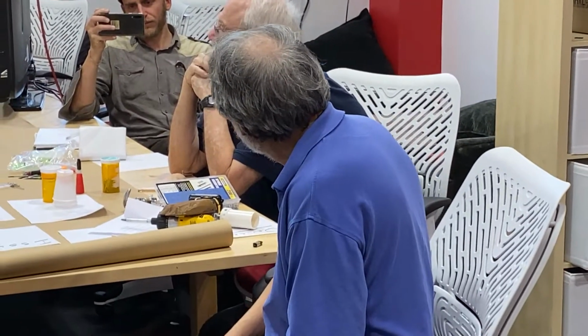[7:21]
So you 3D print the chassis wheels. Yes. So what is the total cost per device? Total cost per device is $12 for a motor, $1 for a battery, probably $1 for the other metal parts. And it's under cost, $20.
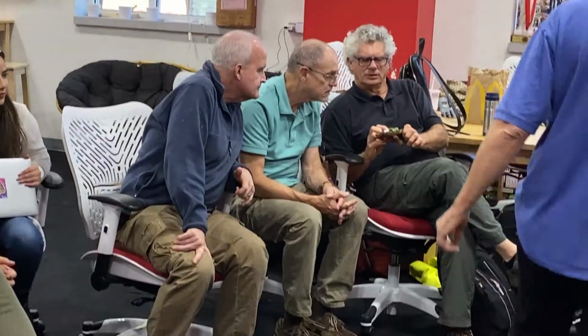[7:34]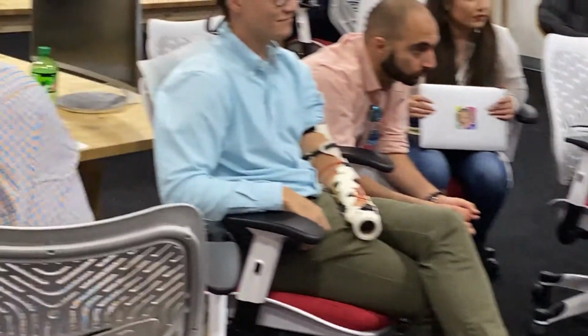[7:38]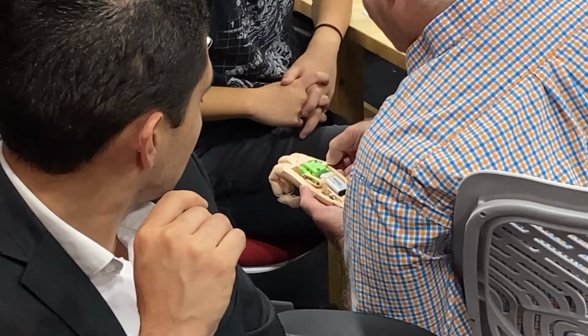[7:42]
I mean, it's fairly lightweight, as you can see. It's not twice as much as the devices for those ones. But it's got all the battery, the electric stuff, all of it. You screw off your hook, and you screw on.
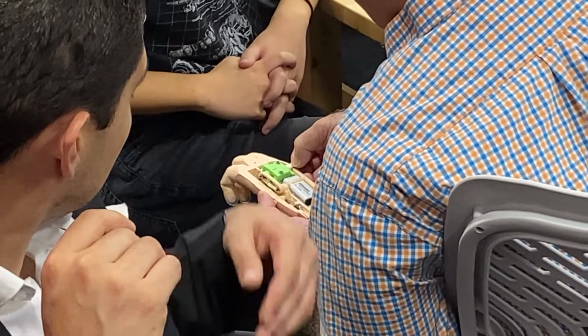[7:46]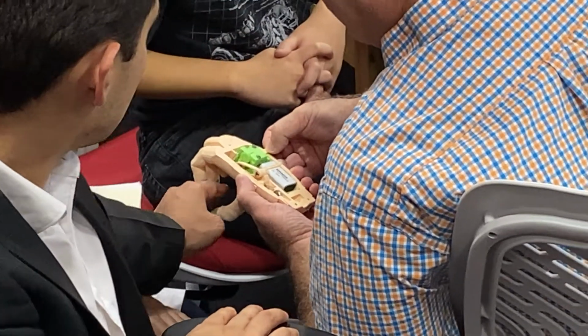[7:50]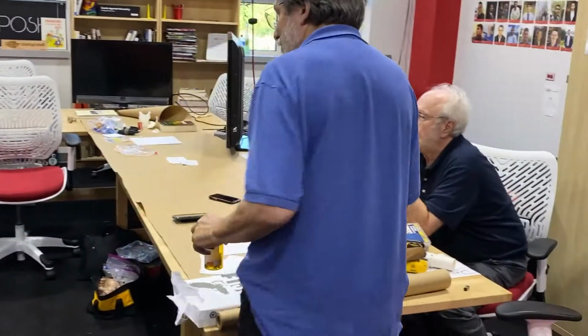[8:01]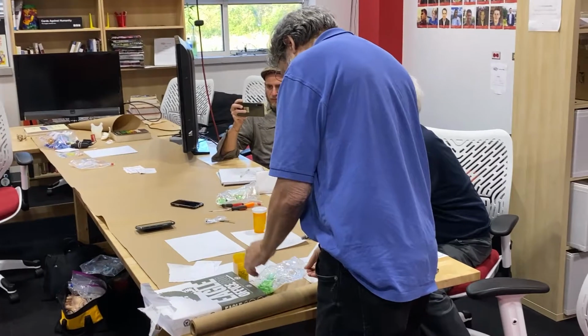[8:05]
Skip and John, remind me, how many open closes was the max that we got during that one test? Well, the one time we pushed it, we ran it at 10,000. I'll set it up tomorrow. You can see it on the label.
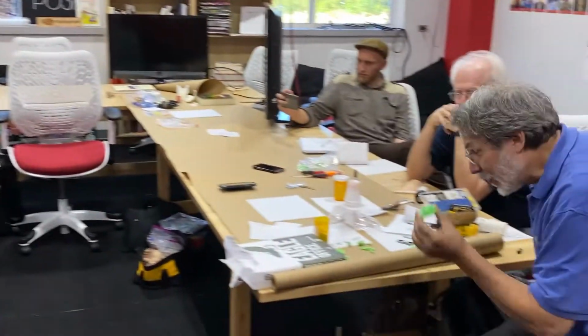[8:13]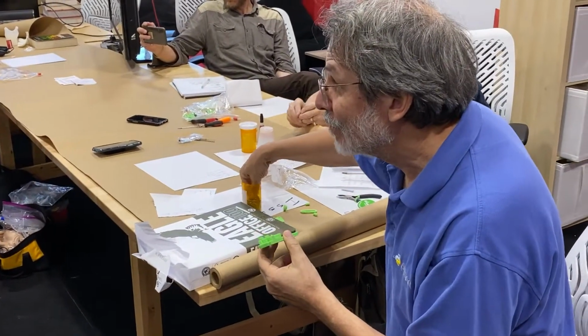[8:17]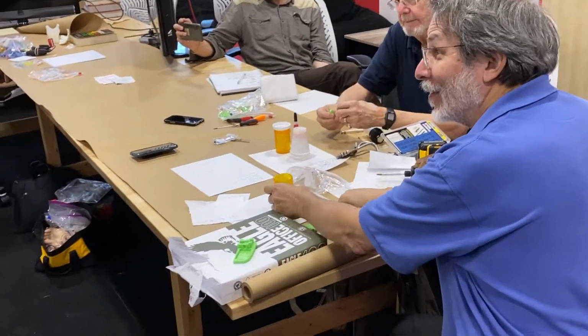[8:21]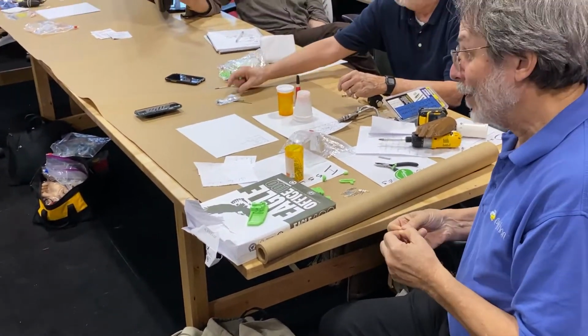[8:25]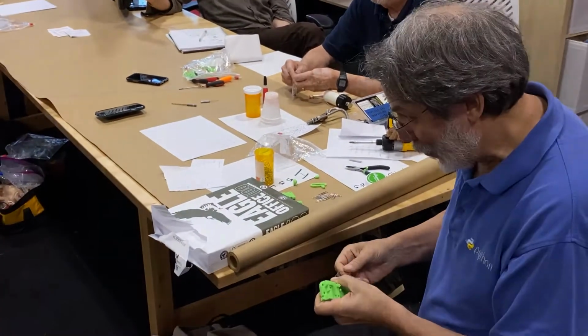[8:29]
And as a matter of fact, at this point, the chassis becomes the guide for bending the paper clips. Exactly. Well, the chassis is the jig. That's the point. And if you'd like, I'm just going to show you what the assembly looks like. As I say, we'd be quite happy to do hands-on tutorials later.
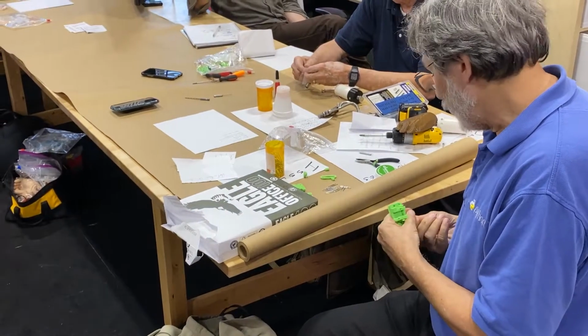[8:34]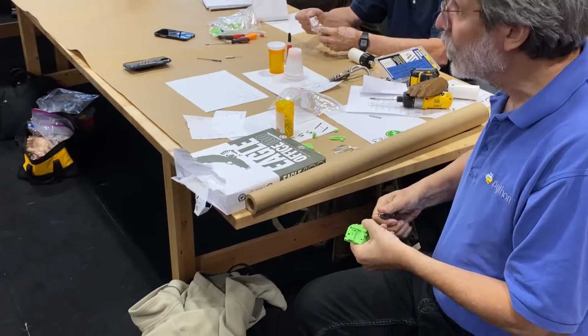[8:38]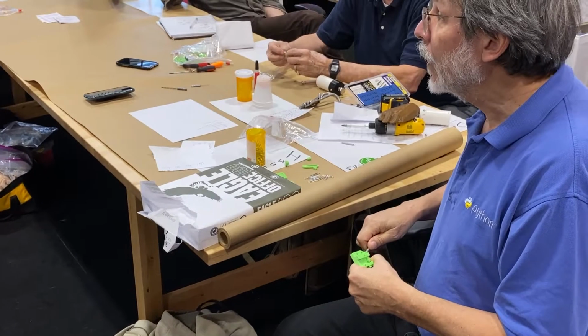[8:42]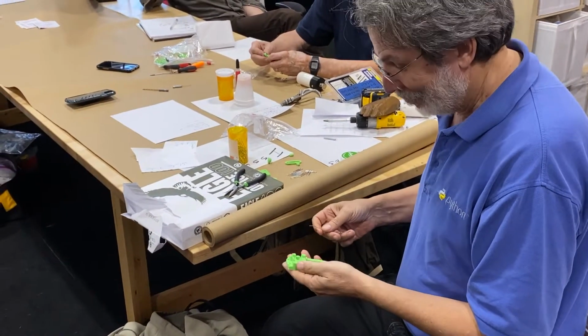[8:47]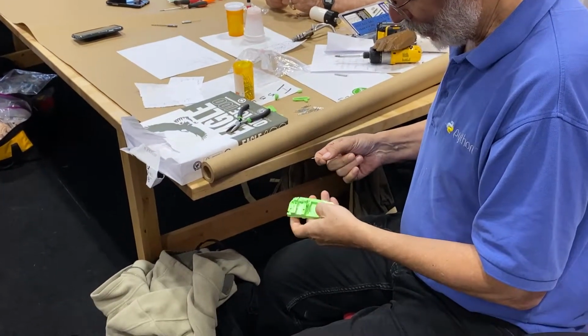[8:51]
But I've been doing this so much, it's become something of an obsession. Absolutely, to try that on our own. Oh, yeah. And I've actually got some nice diagrams and video. You can do that too. Figured all the parts, I haven't tried it.
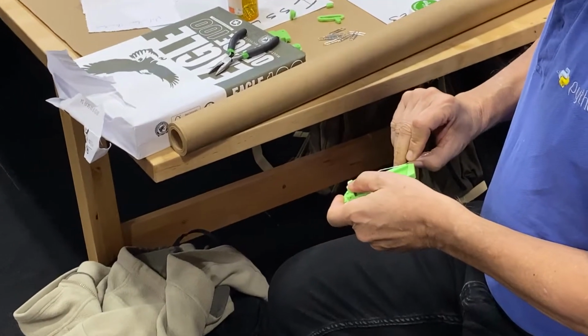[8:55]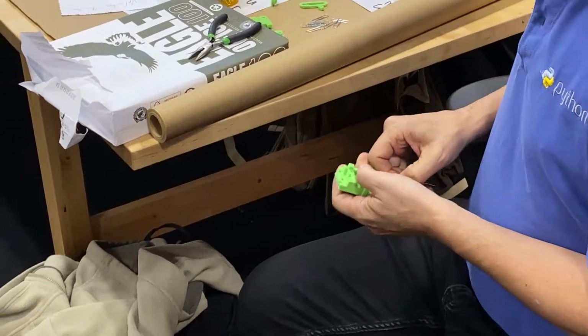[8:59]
Tell me what this is. Battery, this is like the super motor. You're choosing, there's 4 different kinds of motors. And I honestly like the simplicity of that style of motor, so I'm going to use it as an intro to certain aspects. There's 4 different gear ratios.
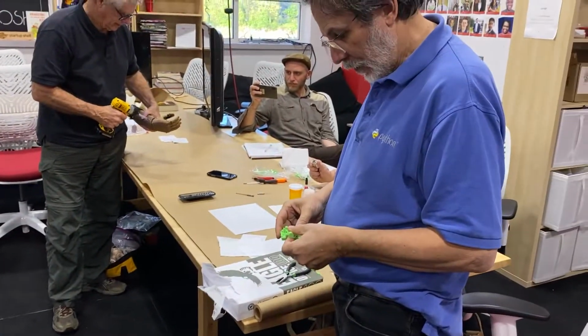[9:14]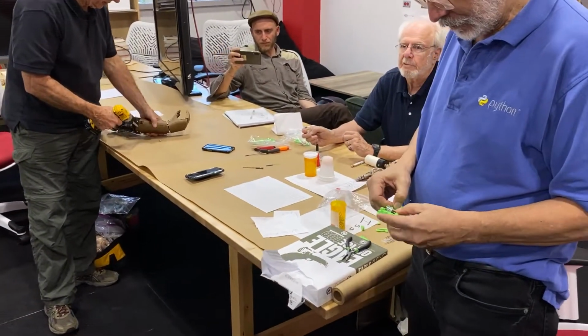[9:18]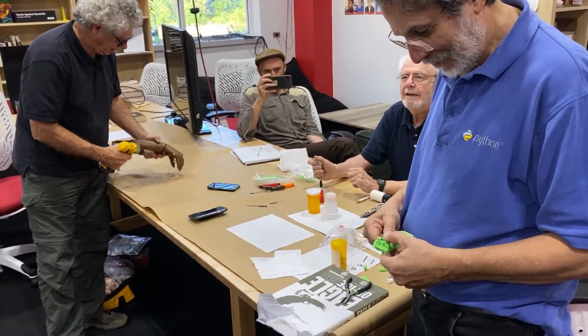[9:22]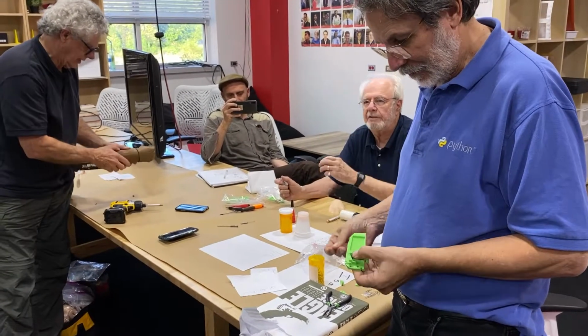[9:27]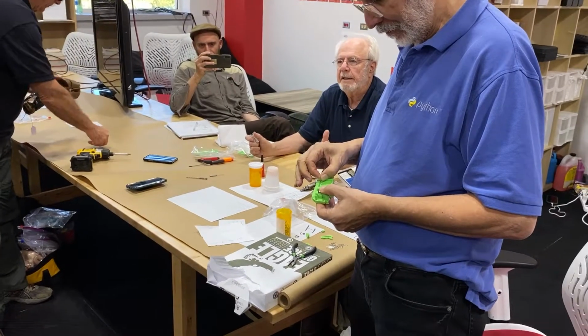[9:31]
We're still playing with different gear ratios, so you've got to figure out which works best. There's like 30 of them listed on Amazon. Wow. But the ones that go up to 1,500 RPM are not of interest to us. And so 10 to 30 seems to be it, when you boost the power up, driving to 9 volts instead of 3 volts.
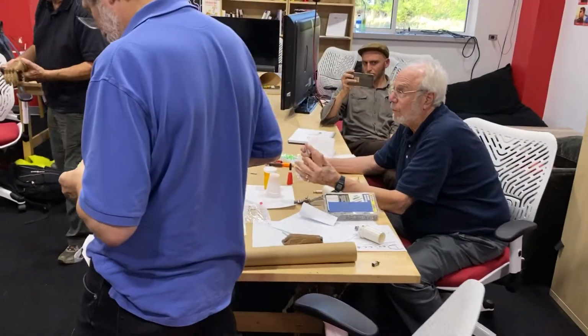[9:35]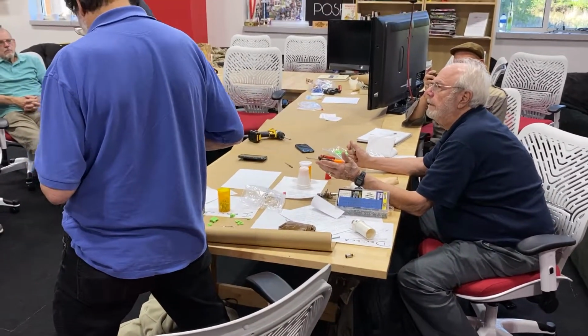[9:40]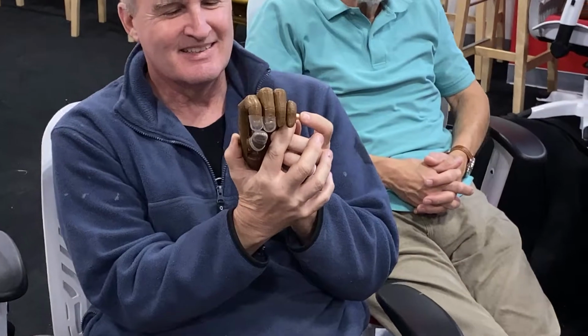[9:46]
You're actually getting, yes, I can see that, the exposure rating and everything. 60 would be nice to put in that, 4 seconds, 1 second. You'll see these things do.
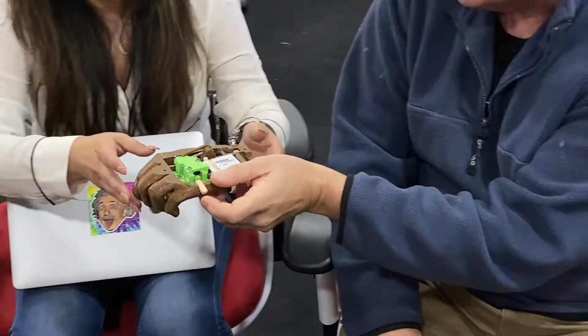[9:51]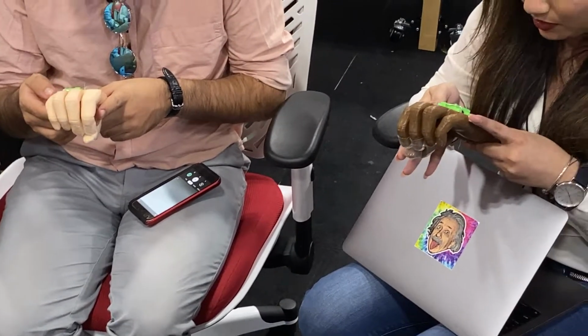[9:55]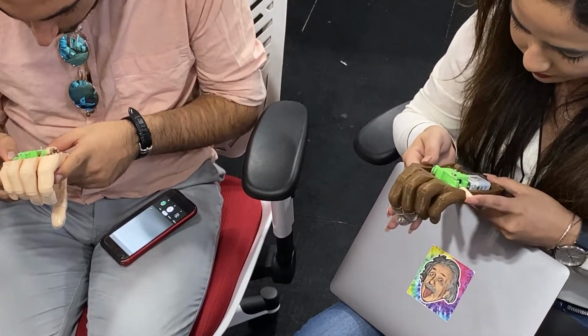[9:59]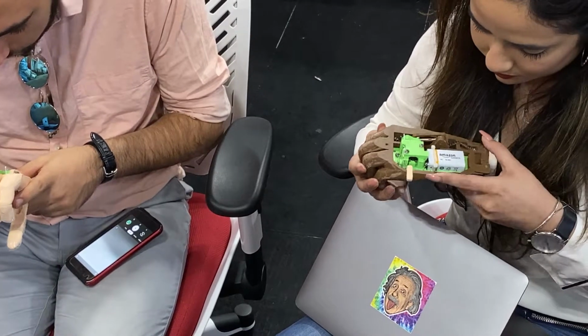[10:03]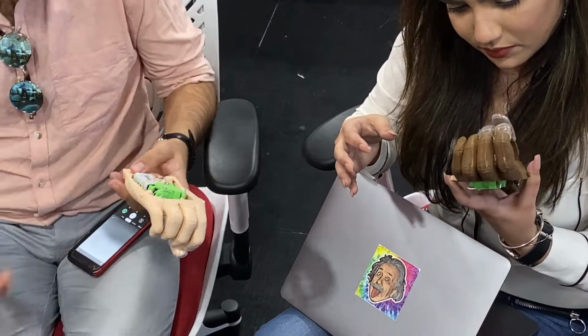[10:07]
How long is the battery life? We don't know yet. Something like 1 month to a year. Really? Thousands of actuations. Because the battery is only providing power while the motor's running. Right. Unlike the one that runs on an Arduino, they're running the battery all the time.
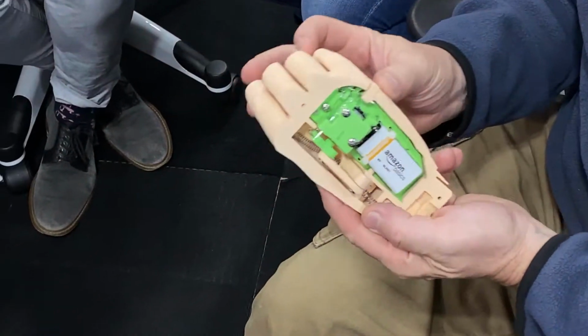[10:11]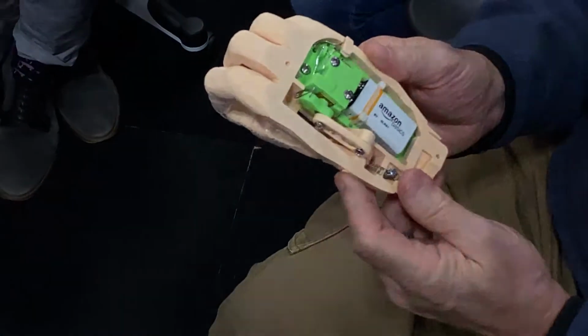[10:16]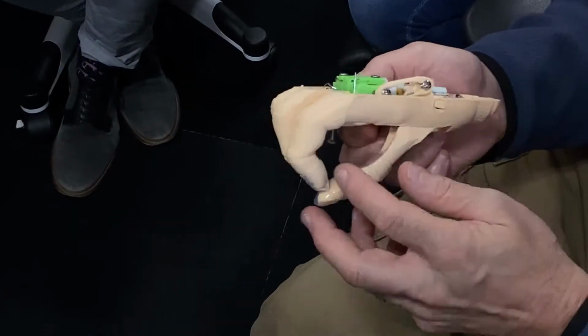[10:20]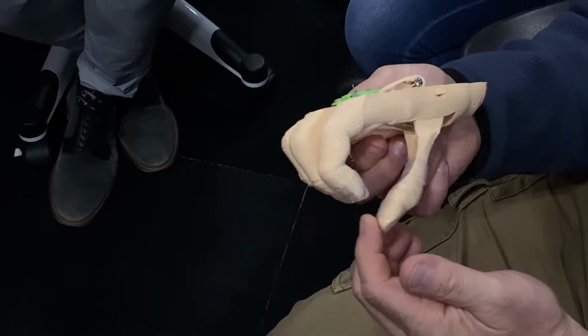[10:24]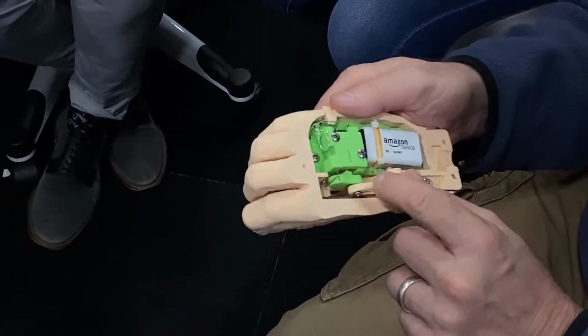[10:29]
So these are the same? Yeah, it's the same. One is just faster, one's slower, because we use different motors, so it just provides different torque, I think is what he said. The voltage is the same because you're both coming from the 9 volt battery. So it's probably just a different motor. One month, yeah.
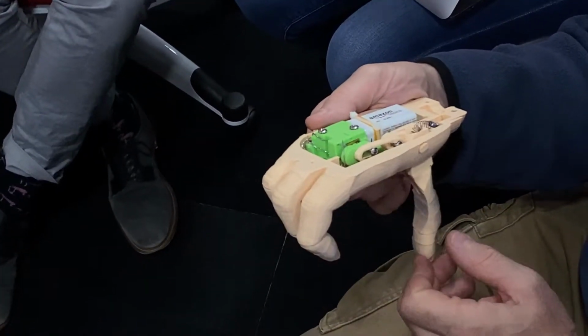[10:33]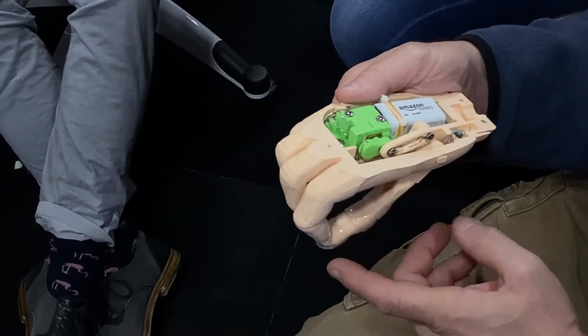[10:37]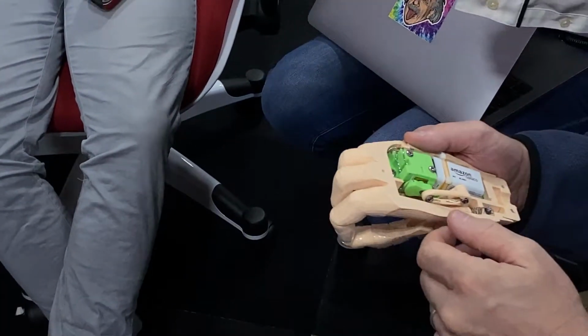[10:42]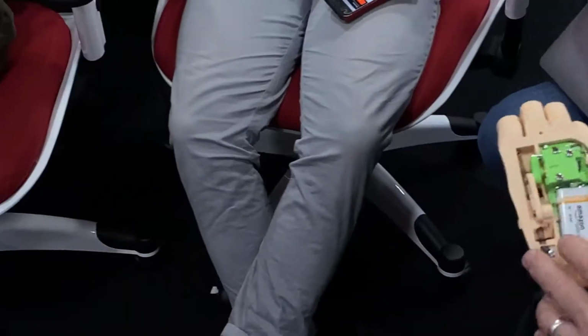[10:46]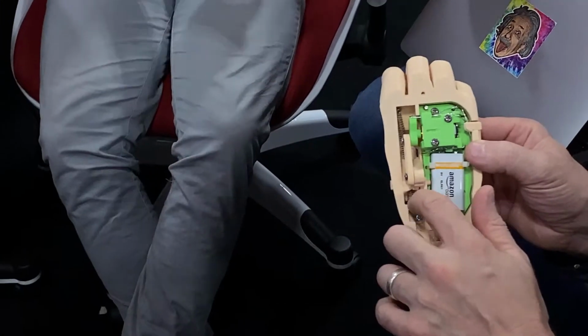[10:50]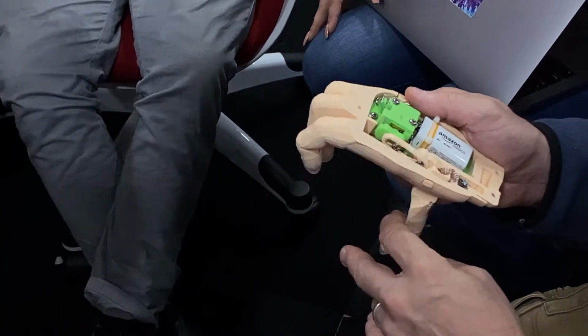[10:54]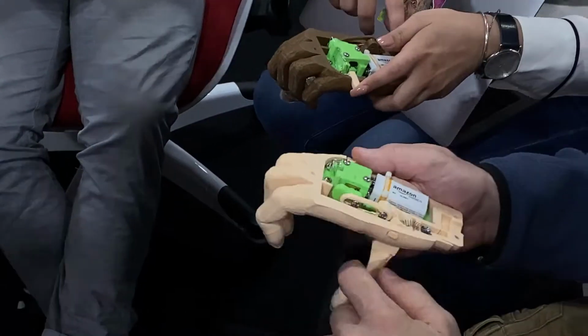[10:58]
That's nuts. Yeah, we used to use 4 paper clips. They really wanted to keep it 4, but we had to go up to 5. This isn't a pen spring, right? These are springs that you bought. It's not from a pen. We've gone beyond that. That would have been really cool. You need a certain kind of pen, very long. This is great.
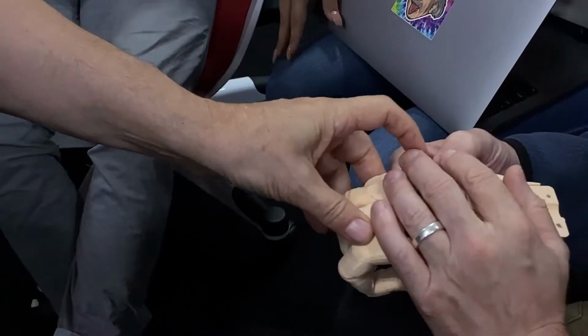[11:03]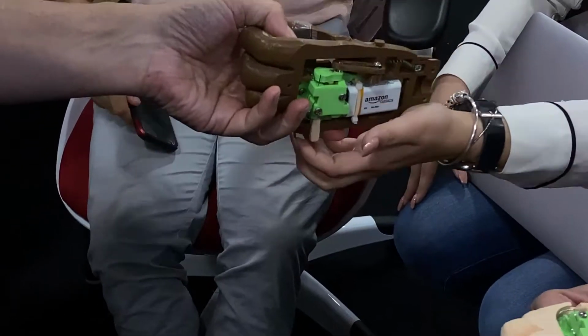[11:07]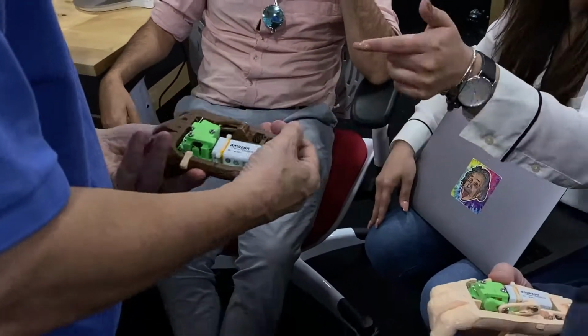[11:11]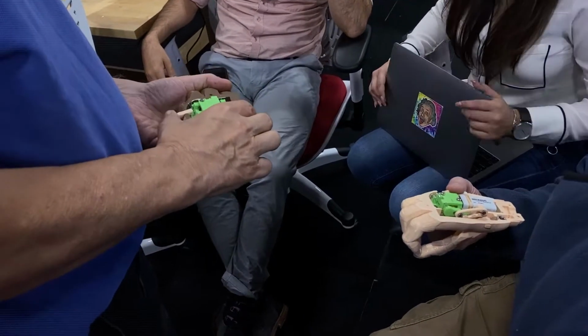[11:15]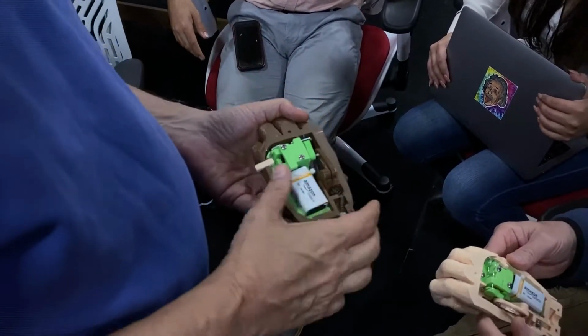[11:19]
I started printing this about a month or so ago, based on the Tinkercad that you guys shared. But I never got around to actually making the whole thing because I was so busy. It's evolved a lot since then, as you can see. We're calling this 1.0. It's ready for you.
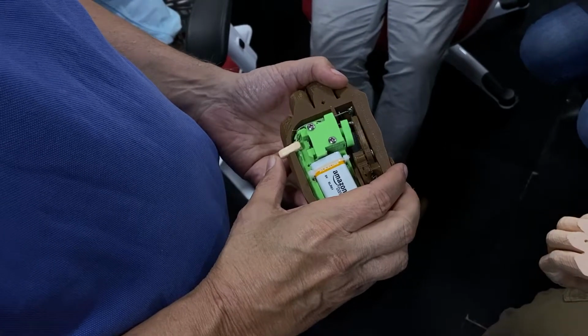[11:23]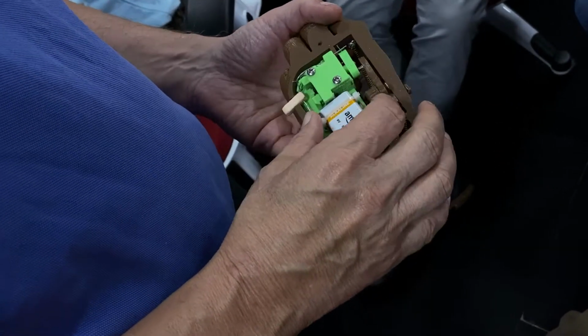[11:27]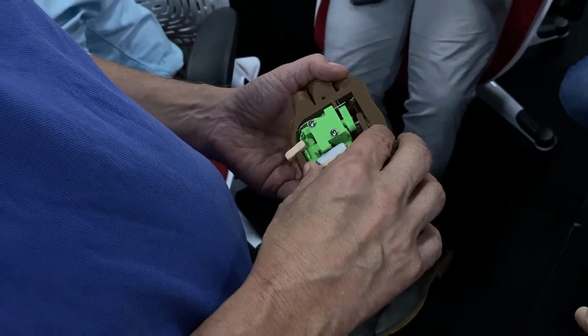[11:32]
How robust is it? Like if I drop it or smack it against the table, does it still function? Well, if it's closed, I think it will survive. If it's open right now, not so much. But it wouldn't be open, so that's a non-issue.
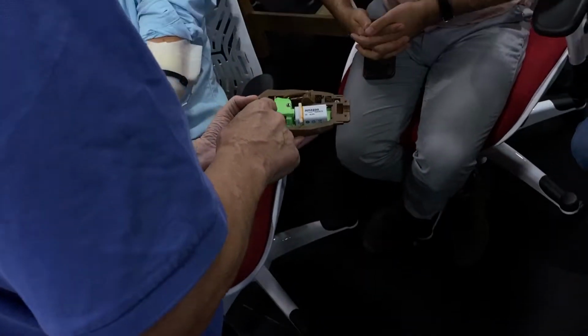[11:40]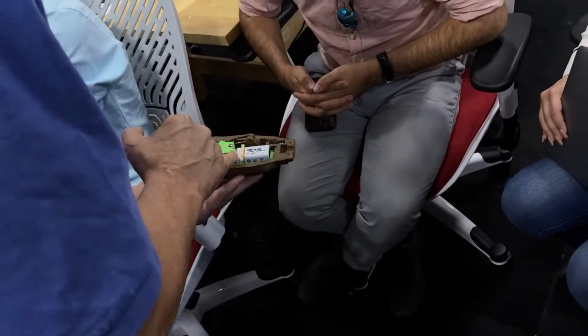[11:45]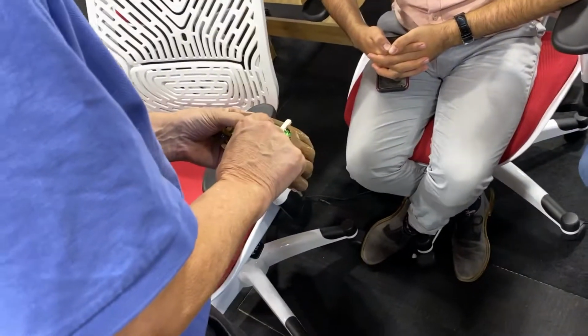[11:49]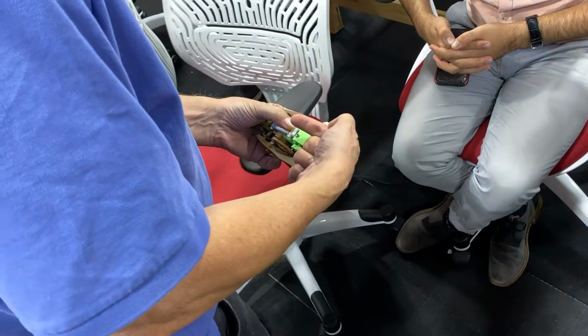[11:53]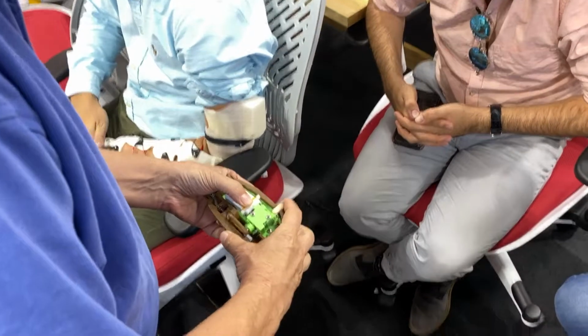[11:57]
Part of the paperclip origami is getting it so that once it's bent, every piece is sort of stressed into place. The most delicate parts are the motor contacts, which are easy to break. But you see, we've got them sort of pierced and supported, and then the chassis locks everything in place.
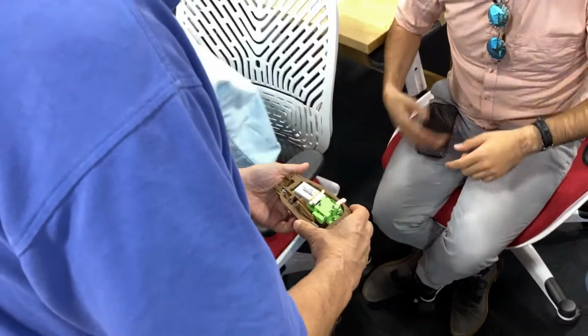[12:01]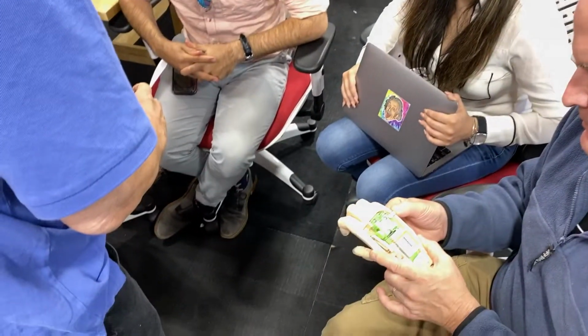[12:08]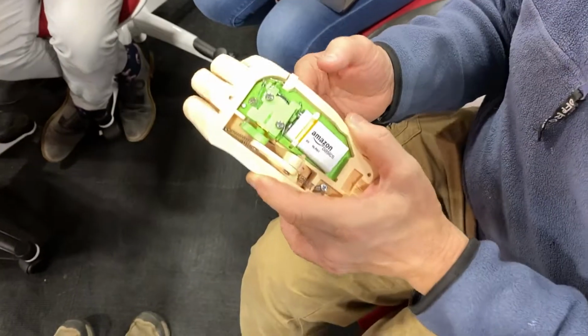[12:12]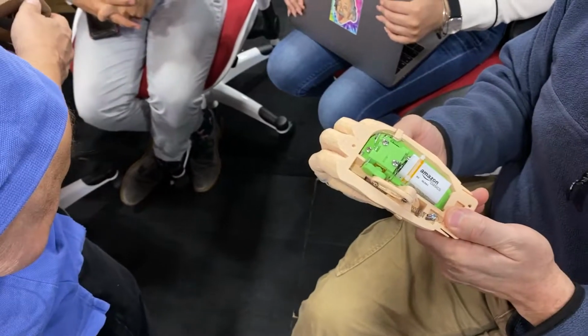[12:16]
How long does it take to assemble, for you to do it, as someone who's done it many times? It took you 30 minutes last time. Yeah, but now I know how to do it. That's still really good. 20 for the chassis, another 10 to put all the components together. Wow. Cool. All right.
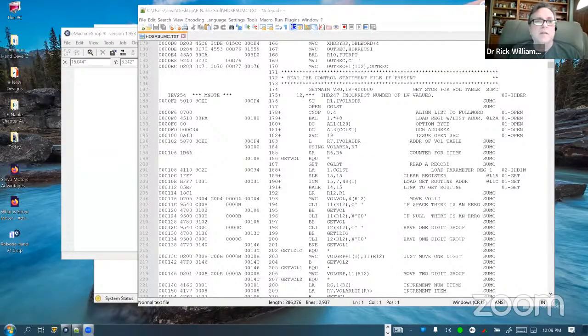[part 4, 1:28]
Hello? Yes, we are here. I did see it. I don't currently see your shared screen. I'm not really sure how, let's see here. You must have done screen, you have a green icon, screen sharing, no? Well, it would appear that I do not. Bring the mouse at the bottom of the screen and the line is showing up. Unless you are not the owner, so you should be validated by the owner of the session.
So it worked for a little while. Huh? Let me see here. Well, unfortunate. Let me try again. Sarah, do I have proper authority to do this? Yes, as a co-host, you should be able to share your screen. Yes, it's sharing now. Okay, awesome.
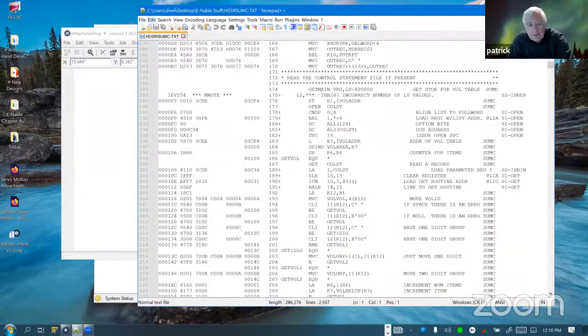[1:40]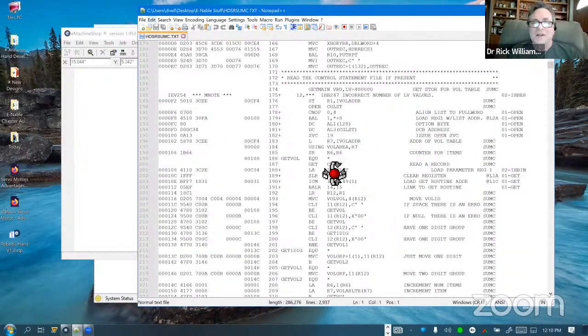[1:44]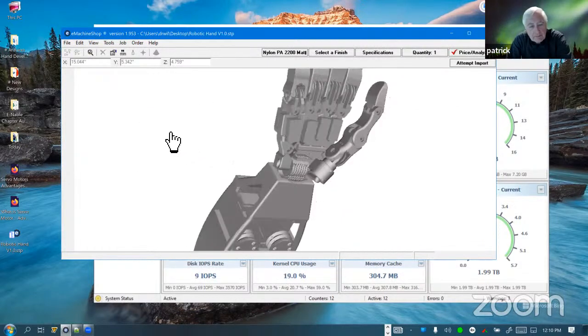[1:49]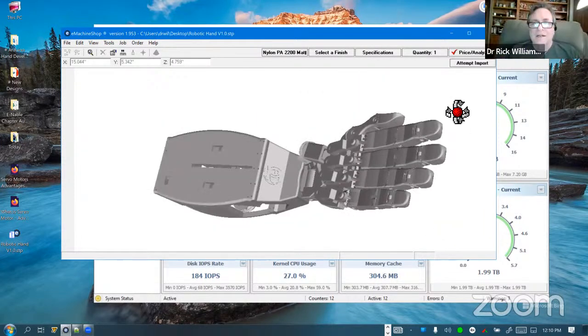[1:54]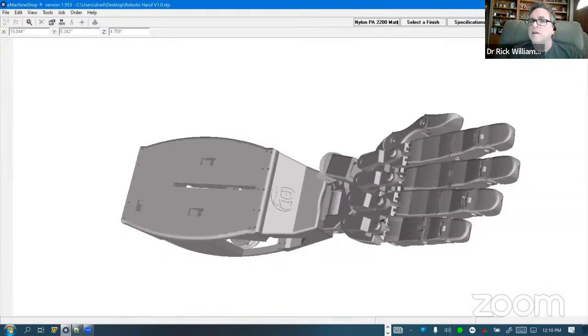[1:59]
So I guess what I need to do is get rid of things like this that are probably in the way. We see your assembler code. Oh, whoops. I see a mistake somewhere. You see what? There you go. It's a joke. It's a joke. Okay. All right, I've got some processes running. I'll just go ahead and get rid of these. Sorry about that. I don't know what happened.
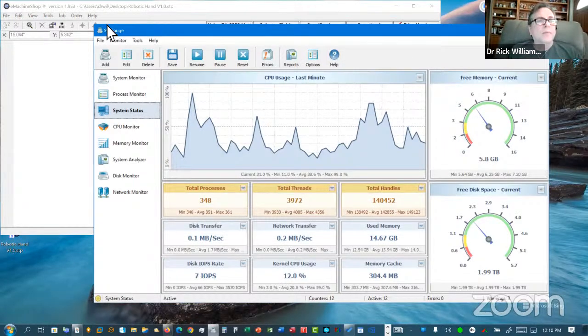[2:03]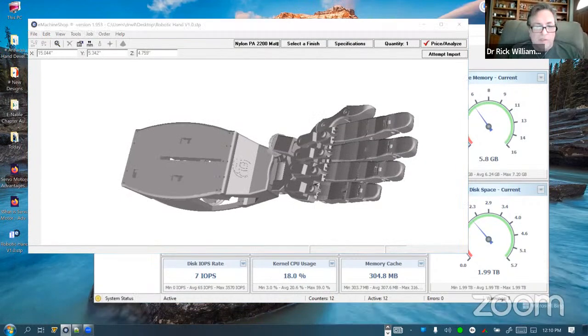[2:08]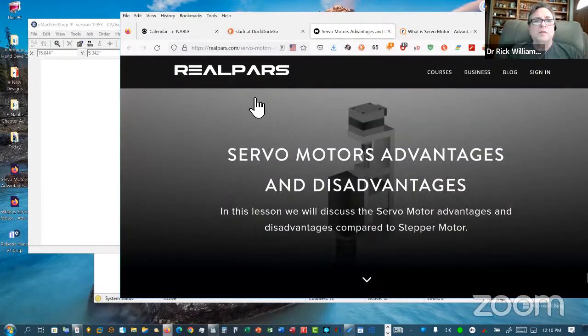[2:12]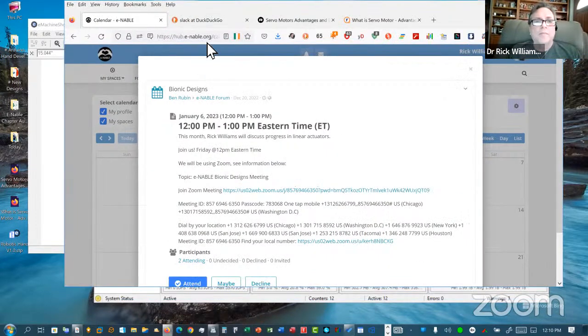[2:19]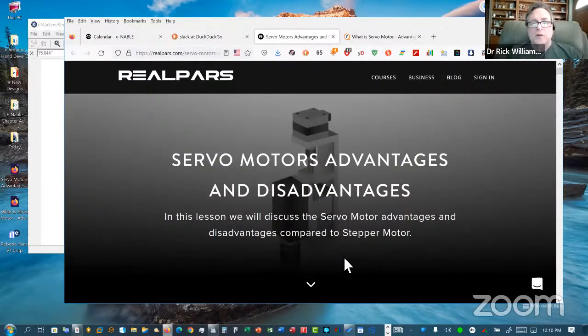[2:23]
One of the questions that we seem to be getting a lot from people, just from the other meeting. Here we go. Servos, motors, advantages and disadvantages. I was sort of asked to put some slides together on this subject because I know people are a little confused as to when to use servos, when to use steppers, when to use brushless motors, and when to use linear actuators.
This is a site that I found last night. I went out looking, and it's from what's called RealPars.com. And these guys, I think, do a fairly nice job of describing some of this information. But a lot of the times you kind of just have to have a discussion like we're having now to really determine what you're going to use in your project.
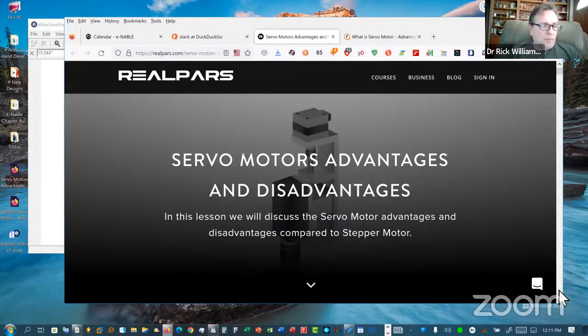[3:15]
Servo motors typically, let's face it, can be extraordinarily large and very powerful, but their practicality is always in question when we're doing what we're doing because of the power utilization and also the amount of torque that these devices can really deal with. People don't really understand most of these microservos that we use in the hands. They're very small, but they still use, in my opinion, an awful lot of power because they're constantly being pinged.
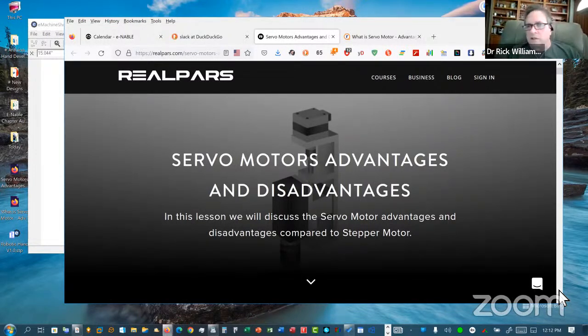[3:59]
You'll always notice that when you're using servos, there's always a warble. They're moving back and forth like one degree of freedom constantly just to make sure they have their spot. It's sort of an oscillation, but that's not a problem except that it helps you understand they're constantly using power. We have really gotten away from servos quite a bit because of the power curve, the fact that they have to be energized almost all the time. It doesn't work out well for us. When we're not using the power in the arm, we want to shut the power off and conserve, because your battery is of course your biggest asset when you're building bionics.
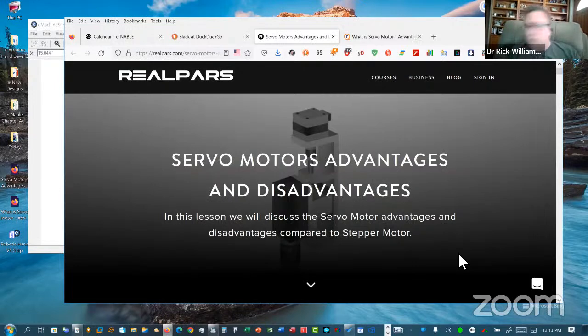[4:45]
So we've switched most of our development over to brushless motors. Not only are they a lot more powerful, but when you park them, they're parked, they're locked, and they require no energy whatsoever. You do not have to energize them once you park them.
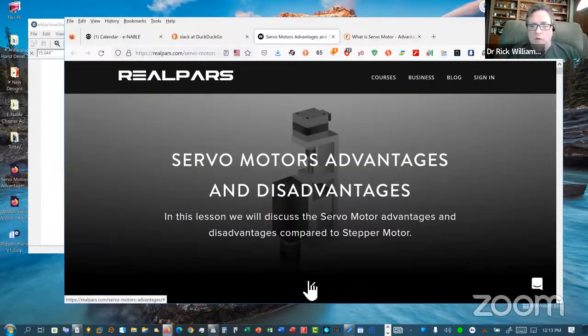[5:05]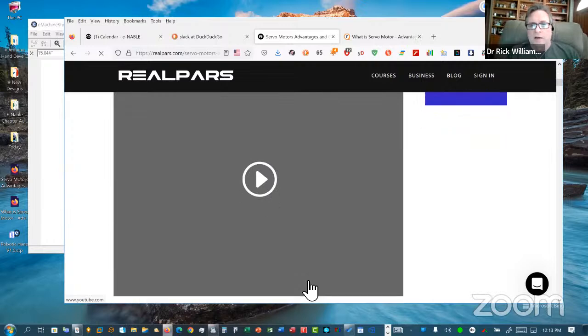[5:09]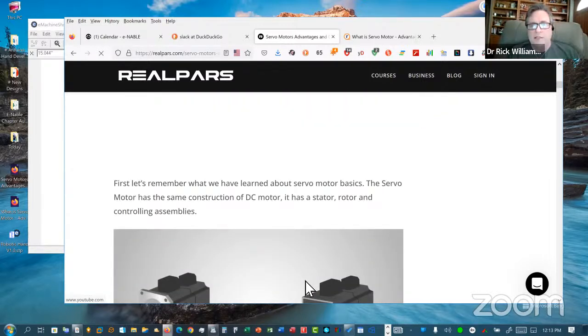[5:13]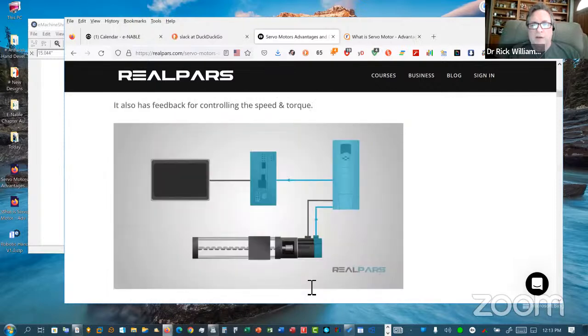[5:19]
What I wanted to do was just real quickly buzz through this website. I would highly encourage you guys to go here and take a look, because I think they've done a very nice job of identifying the different types of motors, whether it's a servo or a linear actuator. Linear actuators, of course, are much more powerful, typically, because the gear ratios are there. They're usually a little larger.
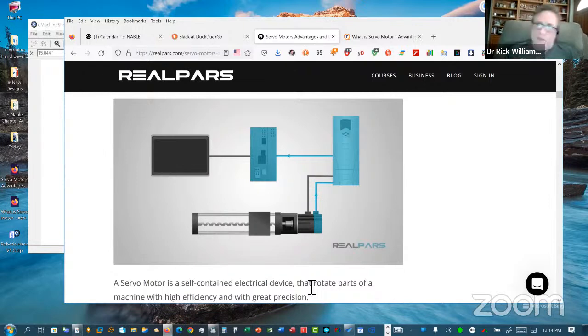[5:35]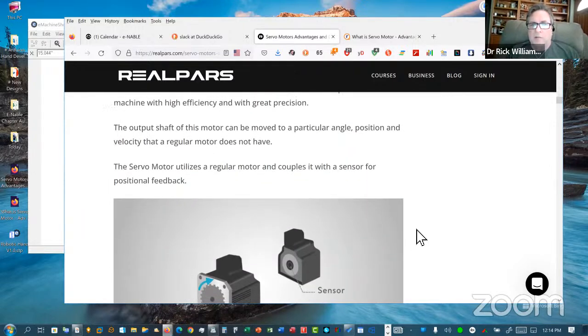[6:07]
We have a couple of devices here that use linear actuators on the hands, because they have a lot more lift, rather than the servos, which basically you're dealing in ounces. With linear actuators, even with the smaller ones, you can get pound torque out of them, a lot of power. Not probably as much as we're getting with our motors, just because of the size differential. But linear actuators are extraordinarily good, but they're also a little on the expensive side.
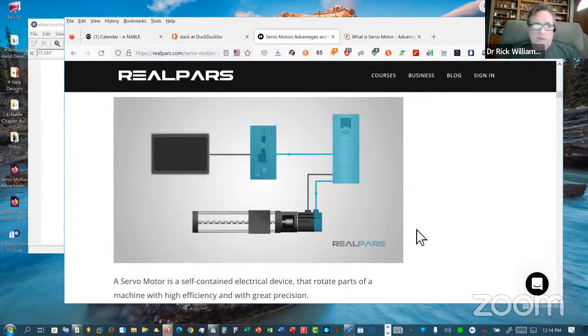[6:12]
The linear actuators that we're using, we have bought some from Atronics, but we also print our own if needed. And we do use them, say, in higher power, like elbow joints or shoulder joints. Linear actuators make a lot of sense. In fingers, not so much.
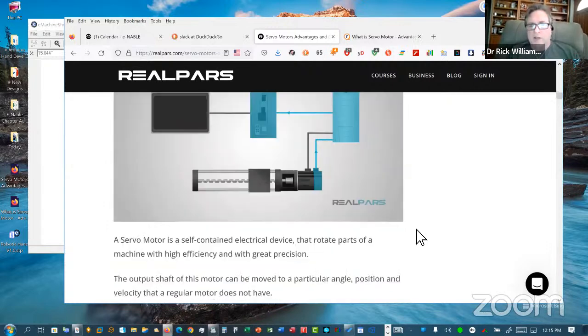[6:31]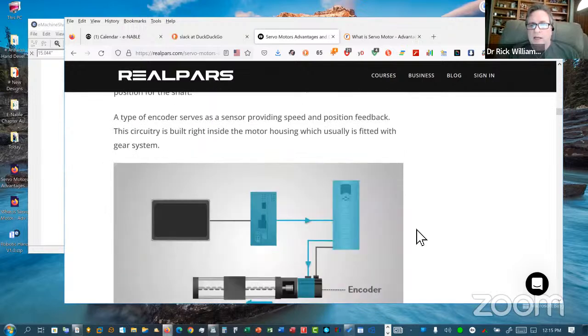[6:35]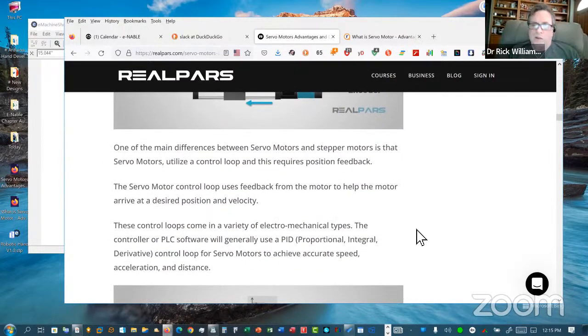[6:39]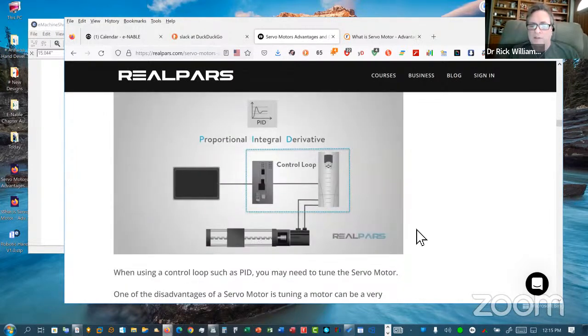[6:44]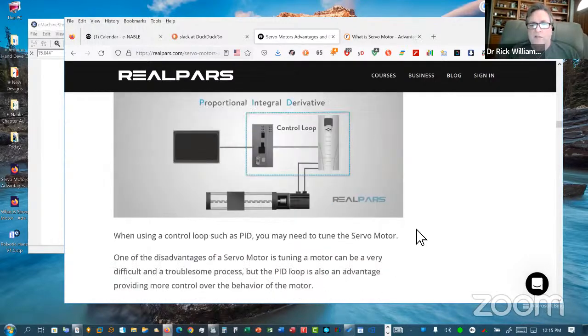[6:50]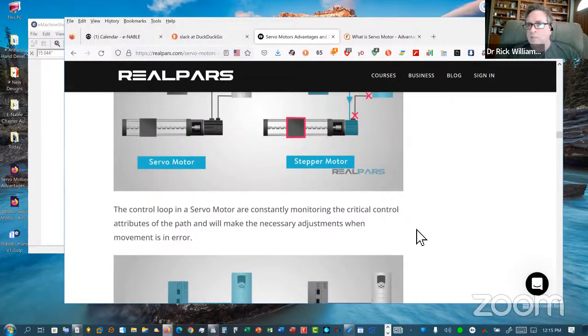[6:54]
It can be done, and there's some people out there that we see doing it, but they seem to have limited success, because even if you can get the thing to fit, the power requirements are still there, the expense is still there, and we have avoided both. We don't like to strap a lot of battery power on humans.
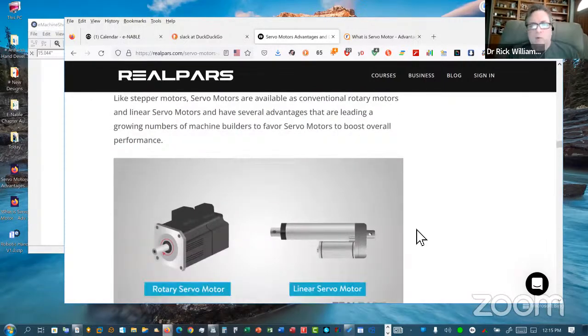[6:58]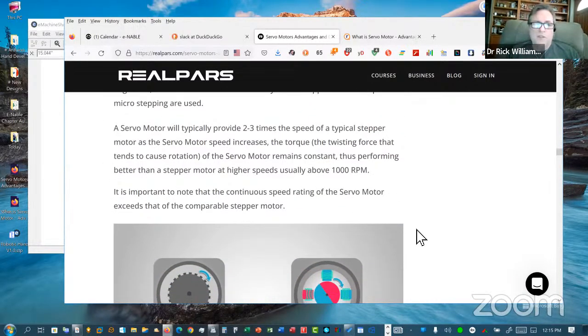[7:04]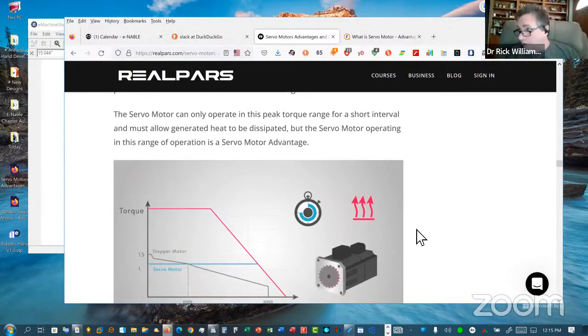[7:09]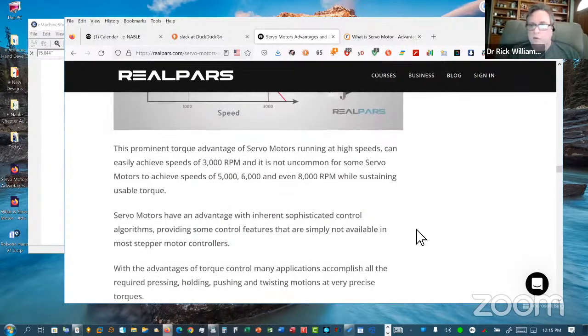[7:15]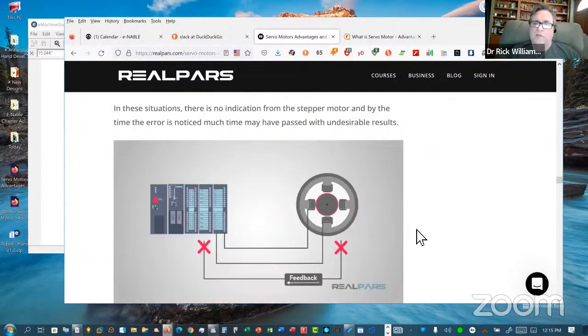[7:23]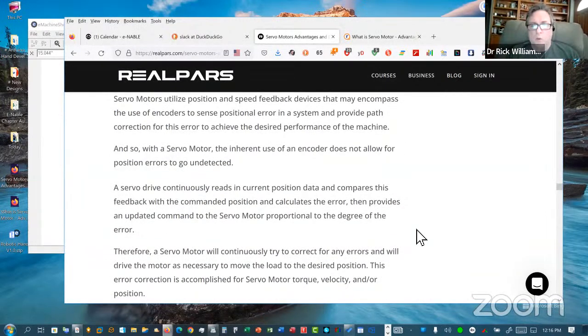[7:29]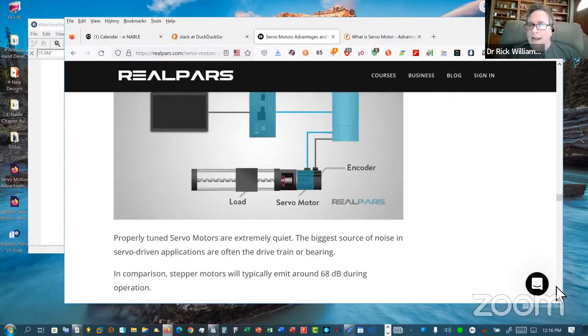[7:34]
But if you just kind of browse through this site, I think it will answer a lot of your questions on these different types of devices. There's also some really, really good calculators out there. And in the event that you're using whatever technology it is that you decide you want to use, be it linear actuators, servos, steppers, some of these calculators can be extraordinarily helpful, because they will level set your expectations. They'll tell you really, what is my torque, what is my lift, what would I actually be able to move with this device.
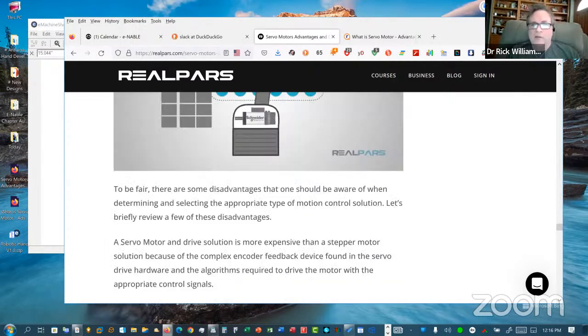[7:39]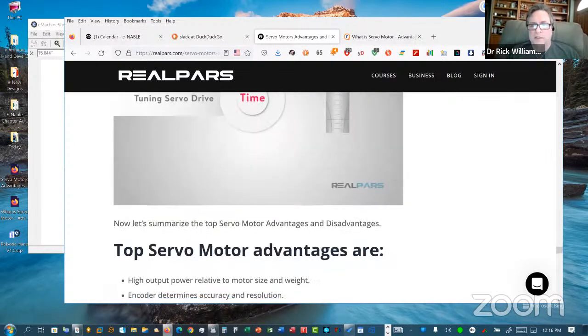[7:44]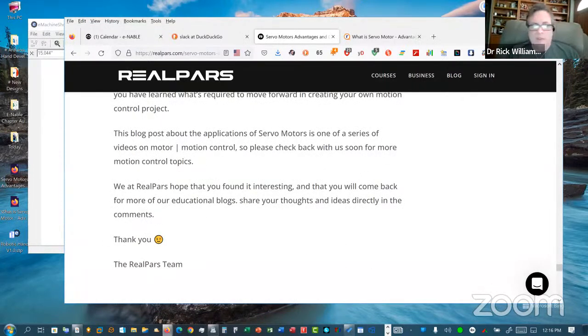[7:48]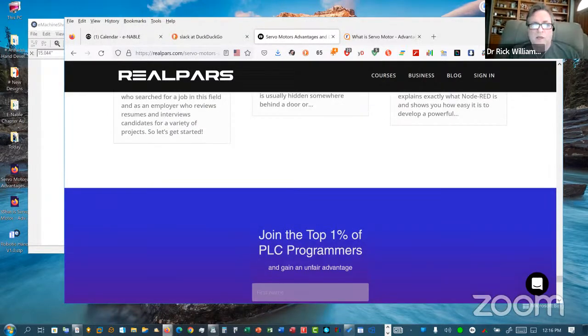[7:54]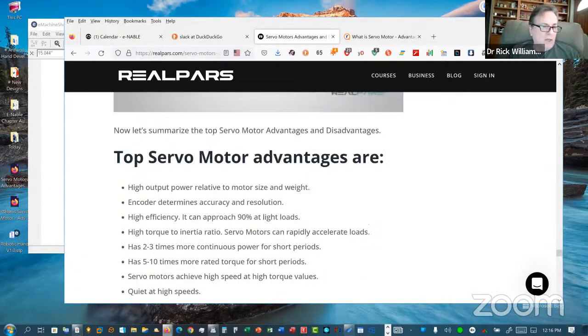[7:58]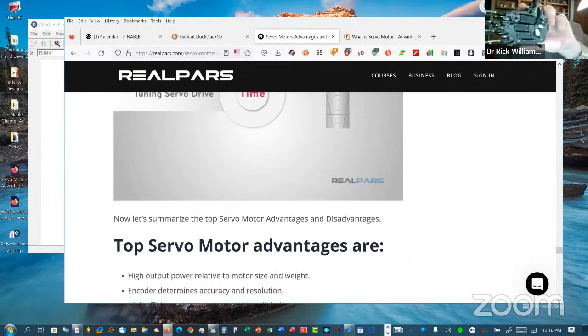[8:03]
We have some people out there that have said, well, we use the full 360 servos because that way we can run them all the way around like a loop, and then we don't have some of those issues. But at the same time, they tend to run into the same issues that a lot of other folks have. This particular device, of course, uses servos.
We have another one here that we were asked to build. I put a table over here full of toys. This is a little show and tell table we put together, but this is one that we use to test our programming. This one doesn't really care whether it's Arduino, a Tinker board or a micro:bit board. We use this to test basically our code from whatever platform we're working with at the time. I'm just going to hook a little battery pack up to it, do just a quick demo, because everybody just loves to see this thing go.
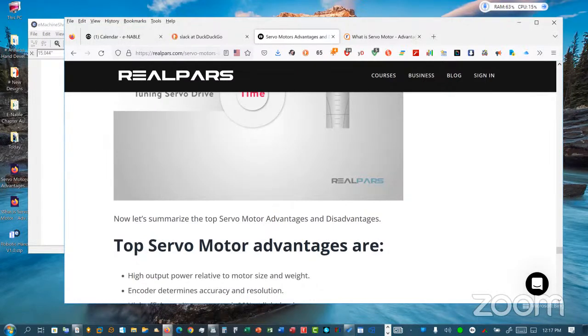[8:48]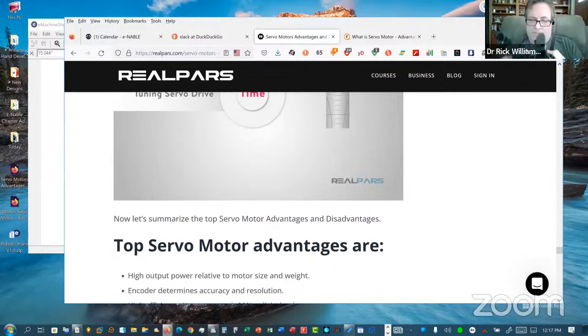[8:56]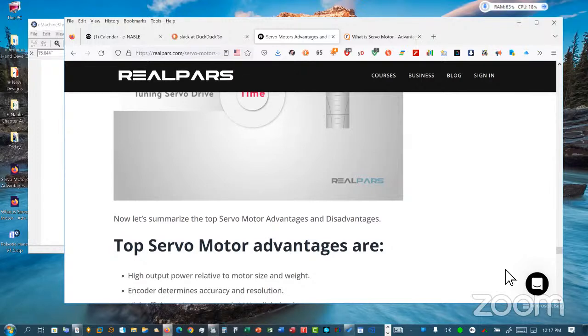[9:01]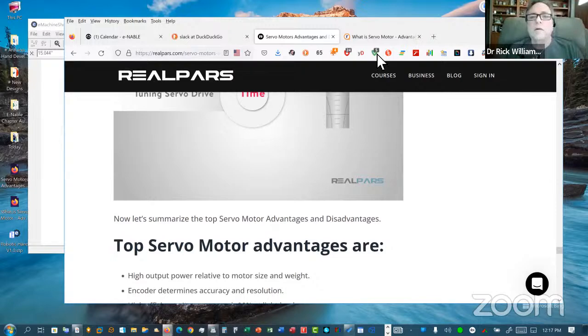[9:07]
Rick, could you replace the screen, your screen by the camera, because you are just like a stamp on the screen. I am? Yeah. Okay, let me see if I can do that. You have to swap the share my screen with your camera, please. Okay. Stop share. How's that? Yes. Okay. Show us.
So basically, this is just a small device that we use for testing purposes. And as you can see, each individual finger, each individual joint is a servo mechanism. The thumb, of course, can swivel. It has a swivel thumb that can swivel this way or open and close this way. This is kind of a fun device because it's just sort of standalone to where you can test code, you can test out basically what you're doing.
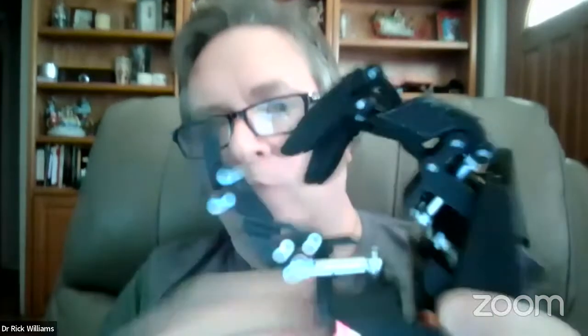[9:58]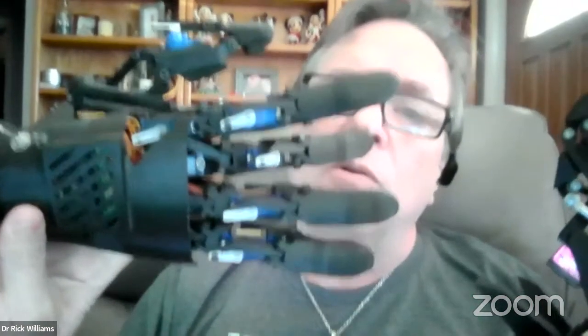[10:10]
However, this one has helicopter parts, and only one servo per finger. Whereas this one has actually 15 servos, which would be 2 servos per finger, a wrist, multiple for the thumb, and of course the swivels. Now, I have to tell you, these servos take a lot of power. If you're driving 15 servos, you need some amperage, and it's incredibly impractical.
So a lot of what we're doing now, we're doing with brushless motors, because we can replace multiple servos with a single brushless motor, and we can generate an enormous amount of power on the fingers. However, by using a single high-powered motor, you don't necessarily get individual control of each finger.
But every time you add a motor, of course, you're increasing the amperage that you're going to be using. What we have tried doing in the past is we index through the motors, where at any given time, only one motor will be operating. It's cyclical, to where it goes and moves each motor individually. That way you're only driving a single motor from your battery at any one time. That does save battery power, but it's kind of herky-jerky. And a lot of the people that we work with that like our bionics tend to say that they really want practicality first. The more complicated it gets, the less they can trust it, more things to go wrong.
Servos also have a very short life. Some of these servo units we have here, we're lucky to get a day. And like the SG90s, for instance, they have metal gears, but the little motors just burn out. They don't have a lot of longevity. However, the beauty is you can buy a bag of these for about $11. So it's not that they're particularly expensive, but people really don't want to do a lot of maintenance on their devices. They just want them to work.
We've had very good luck with just using brushless motors, because we tend to take them out of broken cordless screwdrivers. They have a lot of torque. They've got a great little gearbox in them. They run usually around 3.5 volts.
And quite frankly, they really do the job. I know Sarah's seen this before. I hate to keep doing this, but we have right here one of the devices that goes in a Bionic. This is the entire thing right here. This is the brain, the battery, the charger, everything, all in one. This is the charger unit. So the battery, the power, everything. This basically goes in the cuff.
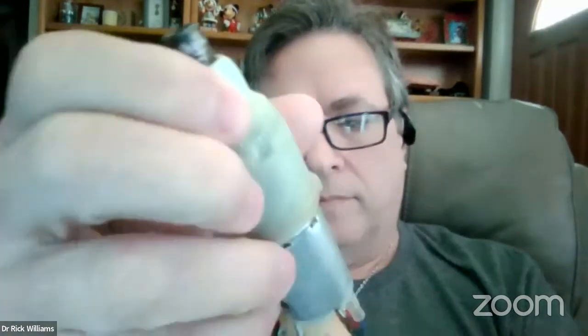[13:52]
And if we were to hook this up very quickly. I hate to stall you guys, but I got to go with it. Let's see here. Let's just give it some power. There we go. Isn't that just awesome?
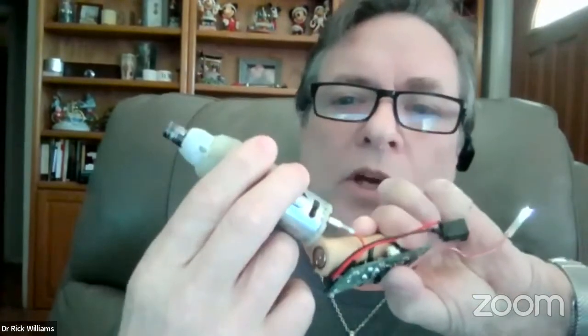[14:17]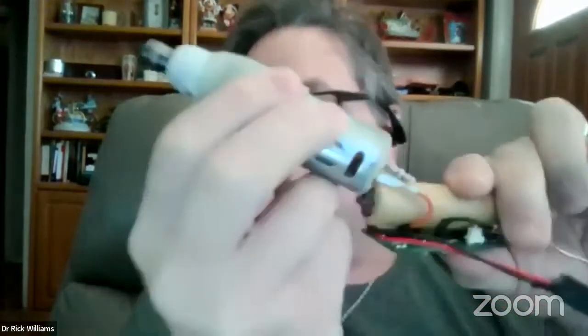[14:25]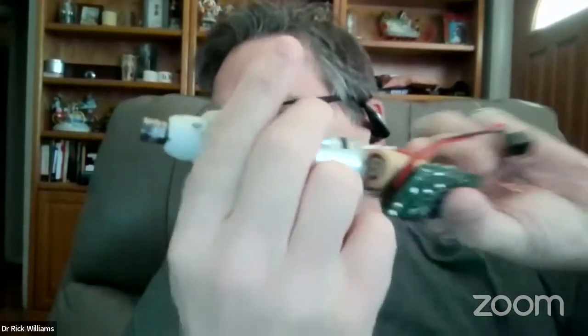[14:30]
Here we go. So basically, I don't know if you can see this thing turning, but when I tilt the mechanism to the left, the motor goes to the left. When I tilt it to the right, it goes to the right, and it goes at whatever speed I tilt it. We call this index gyroscopics because everything's done by a gyro. Now, if you move your arm to some odd angle, it resets. So now it's all reset. So when I turn it, it now knows my plane.
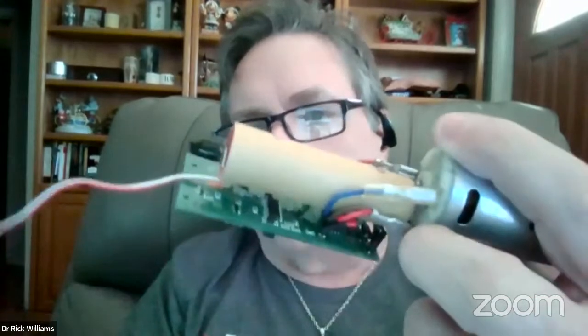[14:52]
Now, this thing is so strong, I cannot physically turn this with my hand. This is basically a screwdriver motor. This guy here is what handles all the gyroscopics. We've had enormously good luck with this because it's super simple, it's super small. This battery will last pretty much all day, depending upon use. And it plugs into almost all of the e-NABLE cuffs. So you have your right and your left, okay, and your speed just by how much you tilt.
And what this allows us to do is to open and close the hand, okay, based on one motor. And the clamping power on this is incredible. It's incredibly strong. So there are a lot of workarounds on these different types of builds and ways to build your Bionic to where you're not really making a lot of compromises as far as the amount of strength that you have versus the complexity versus the power utilization curves that you need.
We are now building that one into, my show and tell hands are all stuck together by cables here. We're building that into this hand. Okay, this one is going to be a proud recipient of that box. And we're also going to be putting it into this hand that now has our new finger technology on it that uses the bicycle chain technology.
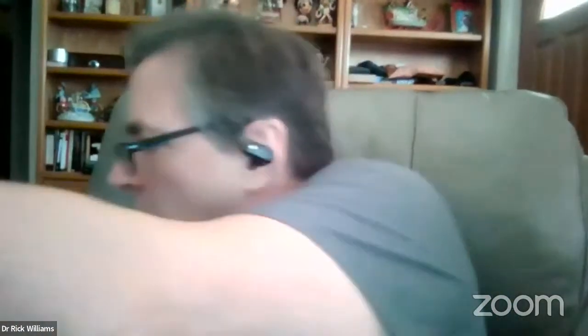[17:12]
These fingers can actually be attached to any e-NABLE hand. And we've since rebuilt these fingers to where now they no longer need the springs that you see on the fingers. So these things are incredibly strong. The tensile strength on these fingers is 2,200 pounds. Made out of bicycle chain, so it's really, really cheap to do. And this is really awesome for people who don't have a lot of access to 3D printing capabilities. And we right now are using this for underwater usage, divers, things of that nature that need an enormous amount of power, enormous amount of torque, and longevity. But these things are super, super strong. That it's just a test one and it's broken at this point, but I just thought you'd want to see it.
Let's see. Rick, sorry, when you say we, who is we? We build, we have our own little lab here. Is it a private lab, or is your discovery available for e-NABLE people? I work with e-NABLE, and anything we do is open to anybody at e-NABLE. Great. It's all open source. Great. Okay. It's called Cybernetic Design Solutions, and we have been building these things for about 6 years now.
It's just sometimes we take a different trajectory on the way we solve problems. And what we're trying to do now is we're trying to take all of our builds, this type of technology, and make it compatible with existing e-NABLE technology. Because it makes sense to do that. People have spent an awful lot of time and a lot of effort designing some of these e-NABLE hands. What would make sense is to be able to look at these in a modular fashion and snap them right into what is already there and already existing.
And I believe that makes a lot of sense because the e-NABLE hands cover a wide spectrum of problems that an individual may have. You know, they may have lost below or above the elbow. They may have lost the wrist down. They may have partials. So it doesn't make sense to discard all that hard work. But if we can augment it and we can make modules that make it better or maybe more versatile, sometimes that makes a lot of sense.
Okay. I will touch base with you because you make a lot of discoveries that can help us. Just for you to see, we in France are working alone, but we already have some achievements, and we are using some Actuonix motors and so on. But I like your chain fingers. The fingers are remarkably strong.
Yeah. And what I wanted to do, if you don't mind, I don't want to hold this up, but I'd like to show you basically how they work. The fingers, as you can see now, we don't use the springs anymore. The springs are no more. That's no longer necessary. This is an early model, but you can see how much control you have over this. It's like an octopus. We have a new model where these springs are no longer necessary. These all go away. So this is the old model I just have sitting here so you can see it.
But when you're talking about a bicycle chain like this that has that level of tensile strength, 2,200 pounds, and then it's tendon driven, which is really a good thing. People say tendon driven is bad. I really don't think that's true. I mean, we're tendon driven, people are, right? So it can't be all bad. These fingers we are attaching to all of the e-NABLE devices that we're putting out there. Of course, we try to cover them with something that doesn't scare the kids, but they actually look quite good.
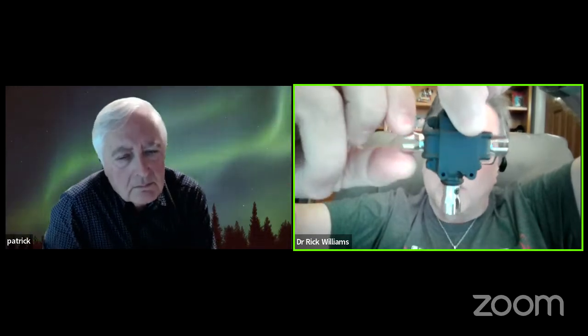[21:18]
We're also using, just so you know, I see that I'm familiar with the hand you held up. We're also using these for transmissions. This is basically the transmission that's in it. These are used for remote control cars, right? So it's a complete transaxle transmission. And when you turn this, it can continue, much like in the Whipple tree, think of it like a posi track in a car. There's a differential system. If you block on the right, it turns on the left. And quite frankly, these are nice because they cost about $6.
They're very inexpensive and they have metal gears. I'm trying to hold it up in front of the camera so you can get a look, but they use them in remote control cars quite effectively. And that's another thing we tend to do: if we can buy something off the shelf for $6, rather than have to 3D print it, it saves us a lot of time and money.
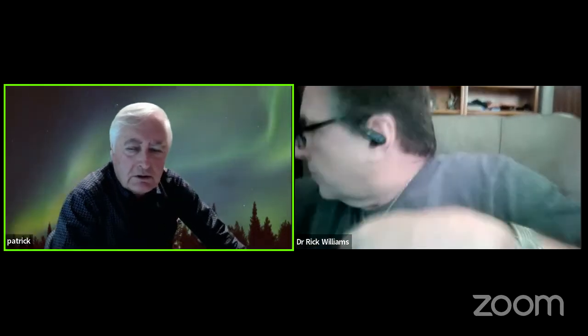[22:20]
About the chain fingers, all the components can be done by makers, or you have to buy something special? No, you don't. You can make these at home in about an hour. The metal parts, where are the metal parts coming from? Well, let me bring one out here, and I'll. No, you just explain. No, it's not the time now. Maybe you have other things to explain. But I'm so curious.
Actually, all we've done is we've taken a bicycle chain, and we've reconfigured it. We've soldered certain components to link them so they don't bend, right? Like these don't bend, and some of them do bend. This is the old spring version, but it's all done by soldering specific joints in a specific configuration. What that allows you to do is some of these bend and some of them do not. With a soldering gun, and we're using the industrial staples from a big staple gun, you put these on. That's what we use to encapsulate the tendons and things of that nature.
We also use guitar strings because they can take about a ton of strength in the tendons, and it basically allows you to configure a standard plain old bicycle chain into these with a soldering gun. Okay, this is good. Just give ideas, right? And what we like about it is we can create them super fast. It takes about an hour to create a finger. I can't create a finger in an hour with my 3D printer. It takes me a lot longer than that.
Typically what breaks the most on the hands that we send out are the fingers. These don't break. They're very, very strong. They don't rust. They have built-in roller bearings. It's super cheap. It costs about $20 for 30 feet of this stuff. So all you need is a soldering gun. In our case, we use number 9 wire, or we use staples, and we solder them in there to configure it so it bends the proper way when you pull the tendon.
And, all this is, sorry, yeah. Okay. And all this is documented, but just if you want to try to take your technology, we can easily understand how to do it and so on, or we have to exchange mails in the future.
Unfortunately, we haven't documented it because it's relatively new. We haven't even released the new version yet. When the new version comes out, it won't have the springs, which were sort of an Achilles heel because they're in the way, and a person could catch them on things and bend them. We've gotten rid of that. The springs are no more. So now they're rock solid.
And what we're considering doing is a video, which might make sense, where we just build one and do a video and then share it with all of you so you can learn to do it yourself. But if there is no spring, how is the finger going back to the extended position?
The way our bionics work is our fingers are on a loop. So when the motor's running, if it's going clockwise, just as an example, the finger will close. When it's going counterclockwise, the finger will open and then there's a stop. It can't go past this point. The reason we do that is because, like a servo, if you go beyond what it's been told it's allowed to do, it'll break the servo. Almost immediately it'll burn it up.
By making the loop, that isn't going to happen, because you can actually control it, like you would on your 3D printer with the belts. You can say, if I get to a point where I'm going to break, I'll just slip. It'll keep where it's at, but it'll say, I can't go anymore. I've grabbed a hold of something and rather than break, I'll slip. And that's all okay. Then when the motor releases, everybody will go back to their original spot. And it works a lot better than it sounds.
It sounds crazy, but it allows you not to have all the electronics that you would need to monitor each finger to make sure you're not going to break that servo or that particular drive on that finger when it comes to a stop. The stop is really important because if you go beyond what the finger can do, or you grab something and the finger tries to keep going, either something's going to break or it's going to stall the engine, or say if it's on a whipple tree, something's got to give. But by doing a loop, the finger will open and close based on the direction of the motor. And if it gets too far, that individual finger will just slip. So each finger is on a loop.
So one finger can stop on a whipple tree or not, it's up to you. And when that finger gets to the point where it's done as much work as it can, which we control with a large spring so we can set the tension, we actually set how much strength that finger can exert before it starts to slip. Much the same way your 3D printer does with the stepper motors to move the gantry. It makes it so much simpler from the build perspective. So now you don't have to have all those controlling mechanisms built into the motors for protection.
A lot of these machines will use pressure. They'll say, if it hits this pressure, then I'll shut that motor down. Well, how are you supposed to do that? Over time, they tend to fail. Things don't work quite right, and they'll tear themselves apart. The slippage is totally mechanical.
Yeah, we were planning to add some sensor at the end of the finger, and that can work for a while. The problem we have had is these things get wet. There's humidity, there's all these things, and the sensors fail. Now, if those sensors fail, your hand's going to rip itself apart if the motor's strong enough, or it's going to damage the motors. I mean, we've done it both ways. I'm not saying it's wrong. I'm just saying you have to build in a lot of fail safes that you can resolve very quickly just by using a slip. And I know how that sounds because it sounds too simple.
So it's interesting. We're going to look deeper into your stuff. We started in this model here. So we are using Actuonix motors with position control. Right, so we skip the issue of going too far and breaking the motors. Okay. But here's the problem: is it a servo or is it a stepper? Whatever it is, you have to apply power to it all the time.
Well, this linear motor is a screw in a rod, right? And we make some measurement to check the counter. I don't know the English word. The counter. When you pull the motor, the motor is not running. How do we call this? The feedback. Okay. So we understand. We measure that it was acceptable, and it is not going to. We can rely on not energizing the motor.
Right. So you're using it as an actuator. Linear actuator. This one. Yeah. And that's fine. But you have to build your fail-safe. The issue I have is it costs close to $100. Yep. The linear actuators, the Actuonix linears are very nice. They're very nice, but they're about $70 US each. Yeah, and in France it's 90-something euros.
Yeah. So basically, here, it's too expensive for us, and so we 3D print our own actuators if we need an actuator. Small like this? Yeah, you can do it. You can 3D print an actuator. Basically, it's not as good as theirs, but it doesn't cost that much either. A 3D printed actuator, there's a bunch of them out on Thingiverse. If you look for linear actuators, you can scale them up and down with any kind of motor you want with a screw drive.
Now, we have used those in the past with, say, number 8 screws. And the problem is you always want to have a very coarse screw, so it moves fast. Otherwise, you're spinning your wheels too much to get very little movement. So finding a very coarse screw is important when you're printing your own, but you can do it. We don't use the purchased linears, because it's just too expensive. We don't have that kind of budget. And we don't need them now. We just don't require them anymore.
Yeah. But the issue we have is the woman we are making this for. She has no fingers anymore, but she has a palm. So the whole gear is in her hand. Yeah. So all the motors and electronics should be on the gauntlet. A gauntlet, yes. And she cannot wear a gauntlet with a lot of motors on.
Yeah. We have found there's actually a study that was done, I believe the number was 92% of people who have upper limb amputations are partial hand. That's a really big number, partial hand. And because of that, that's why we changed our focus. We want to do the partial hand because it seems that is the biggest requirement that we're seeing. In order to do partial hand, your mechanics have to be inside the hand. Some of these partial hands have some fingers, they have some things that work, and they want to use them. They don't want them covered. This is our case, yeah.
Yeah. So by making it small enough, instead of using this type of shell, we will actually make a form. We take the hand and, the same way you probably do with the alginate, we build a mold. But we take that mold and we thermoform with a vacuum forming machine over that nub, whatever it is they have that's existing. And then that is what we use for the hand, and then we put the electronics in there.
Yeah, but for this hand, the hole is for the palm, so there is absolutely no room for any electronics and so on. So it should be on the gauntlet. That's the whole point that I think you and I are discussing, there's no one way to do this. You have a lot of people with a lot of different types of injuries.
I'm pleased to meet you, because for the time being, we did not come to the hub and to the group, because we saw that most of the projects were for robotic hands, where they have no issue with room and stuff like that. They put all the motors in the arms. It's okay, we have to find by ourselves. Now we know that you have the same issue as we have.
It's like the In-Moov hand. Remember the In-Moov hand, and all the mechanics, the spools and all the stuff, were in the forearm. It was terrible.
That was a robotic project in Japan, and it was nice in its time. They have half of the arm, so they can put batteries and motors and electronics, and it's very nice. And even for Bionic arm, which is a US company with a lot of fancy stuff like Iron Man. But what makes it easy is that by using this methodology with this size form factor, we can in fact fit everything right inside the hand on a partial.
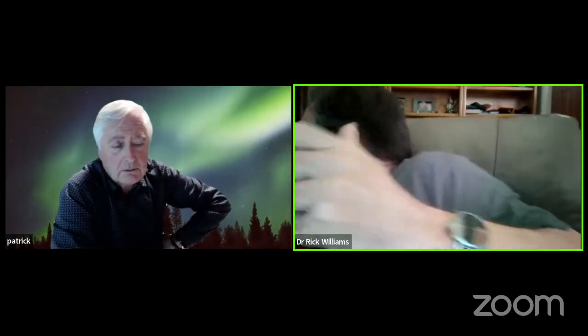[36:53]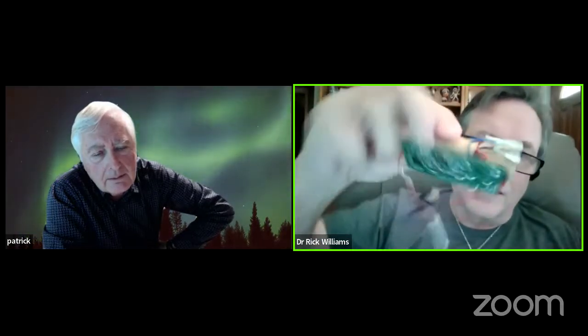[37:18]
So that means that you put the electronics and the motors on the arm, on the gauntlet? No, in the hand, right in the hand. Let me grab my thing again, because you have to remember the one that I showed you earlier with the index gyroscopic technology. This is everything. That's the whole thing. Everything, the power, the charger, everything. That's it.
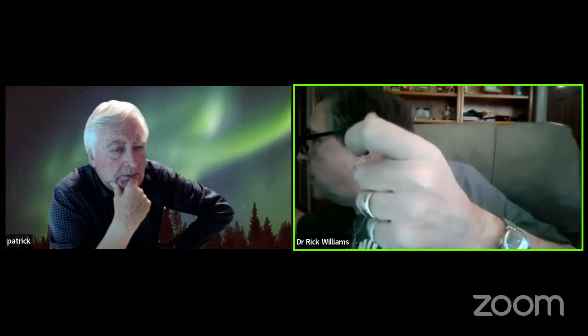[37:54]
And how many motors for the full hand? One. One motor, and it's a very powerful motor. One motor for 5 fingers? Yes. And the reason is that's how you get everything down to the size on a partial, and it also makes it modular. And the motor itself is a 3.5 volt motor from an electric screwdriver.
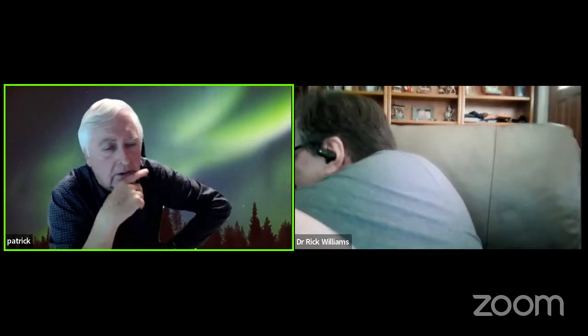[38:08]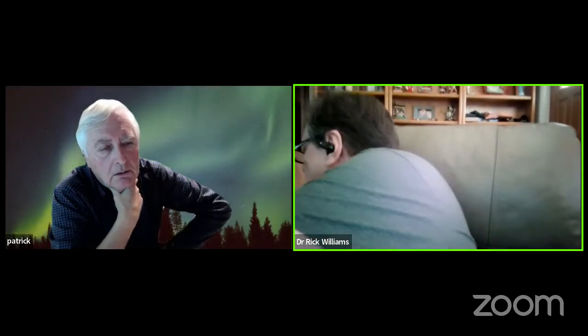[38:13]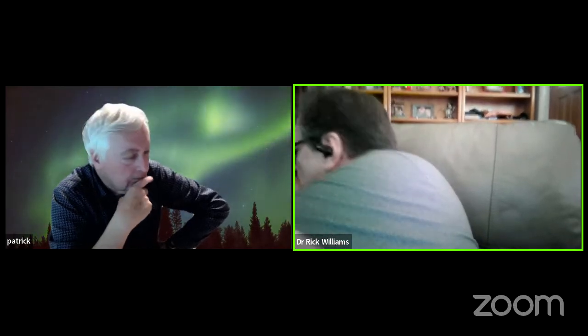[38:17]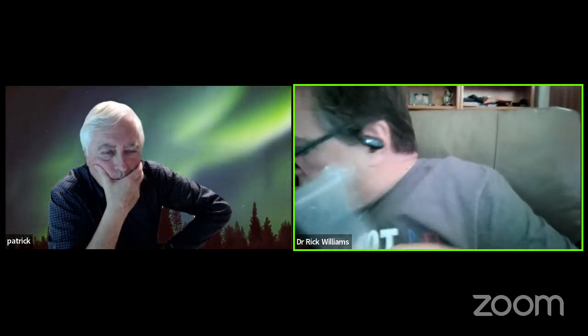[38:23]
Yeah, I saw that, but could you show me again the full hand? I have a table here full of stuff, and I think I've lost myself a little. I apologize, I'm not very organized. This is the motor here, and the transmission and everything is right here. We use smaller motors if it's inside the hand, because by using this configuration, this is the whole motor. The rest of this is transmission, which we don't necessarily need, because you can make your own transmission with the one that I showed you earlier, and then you can put your own gears in. We print our own gears.
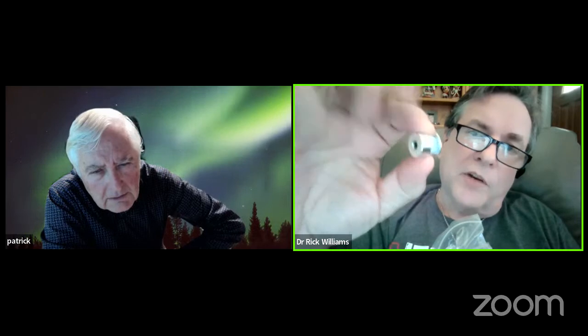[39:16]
Now, the reason we do this one is because it's so small and cheap, and it will easily handle the whole hand. Now, in order to do the slip, we use these standard gears, I'm sure you've seen a million times on your 3D printer. And these work very well for the slip. Now, if you want a little better bite, instead of using a cable, you use a belt. And when it gets to the end of the belt, just like you have on your printer, you just end the belt. You get rid of the teeth on the belt where you want it to stop. So then it's got a really serious grip up until that point, and then you just take the teeth off the belt where you don't want it to have as much of a grip.
Now, you'd be surprised how much torque you can really get out of one of these things. You should know, the gantry on your printer works the same exact way, and it works very well. And what we then do is you can take each finger on a spool, and each finger can have its own belt or its own tendon. So much like the others, when one finger stops, the others keep going because it slips at the grip you have set by the tension.
So in fact, with your fingers, you open the hand or you close the hand. Yep. But you could not say, I just want to make a pinch between my index and my thumb? You absolutely could. You always have the option to put in multiple motors. That's the whole point. You can put in as many motors as you want. Yeah, that's what we do here with two motors. We have one motor for the index and the thumb, and one motor for the three other fingers. It's all about the control, though.
Now, what we call index gyroscopics allows you to do the open and close without having anything hooked to your arm. It's all by a gyroscope. So when I turn my arm this way, it could open, and when I turn it this way, it could close. And the speed is determined by how fast I turn my arm. When you're done, it just quits because you tell it. And you can have that work with as many fingers as you like. We even had one model where we just powered on and off each finger.
So you could actually do gestures, and it made it super non-complicated because it was a simple on-off switch for each finger. Have you experienced that on a real case with somebody? Because the lady has our former hand, which was manual.
Okay, she's cooking. So she takes a bottle, and then she pours the liquid in the vase. Okay, so if the gyroscope understands that she opens the hand, the bottle is falling down. So I think that should be quite difficult to understand what to do with the order of the gyroscope.
That's really up to the programming, because the gyroscopics you're doing with programming. So you can actually say, if I do 2 clicks like this, then I want it to give me this gesture. And you can set your gestures up accordingly. And then you can say when the gesture is complete, then it's complete. And it's going to ignore other gestures until you give it one it understands. And by doing that, you don't have anything touching the skin. You don't have the musculars. You don't have the myos. None of all that, which are very much a problem with humidity, with temperature, with your sweating.
You have implemented this software with a microcontroller with an internal IMU, a 6 degrees of freedom IMU. We're using micro:bits. And the reason we use micro:bit controllers, which you guys over in France love, because this was a UK design, is that the micro:bit controller has all of that built in. It used to be, before we started having problems with importing, they were running about $25-30. And they actually have a screen, an 8x8 screen. They have all the gyroscopics, they have compasses, they have everything built right in.
And you work with Arduino IDE? No, Arduino we don't use anymore. So what kind of IDE is used by micro:bit? They can use blocks, they can use Python, they can use pretty much anything the Arduino can use, but the beauty is you don't have any more hats. The hats tend to go away. Like when you're using Arduinos, you've got to have all these hats for everything you want to do. The one I showed you earlier has an Arduino Nano in it, and it's a big pain in the butt.
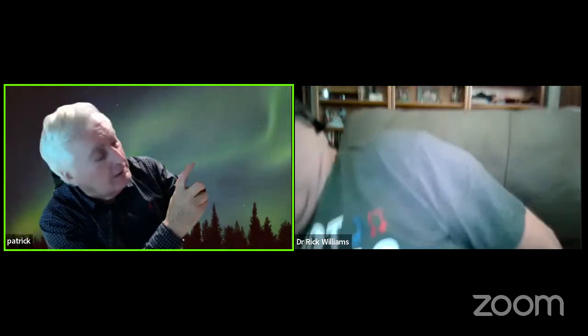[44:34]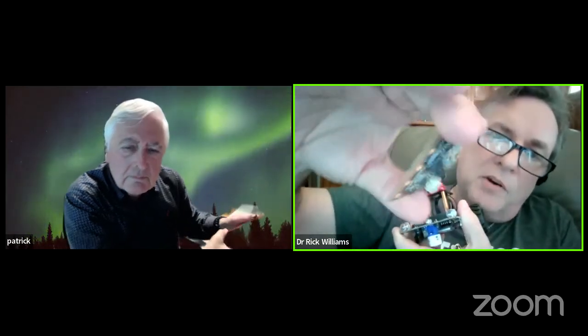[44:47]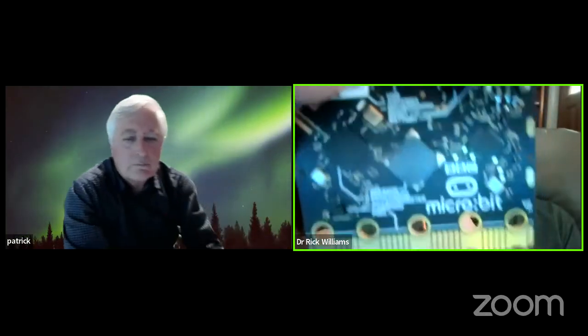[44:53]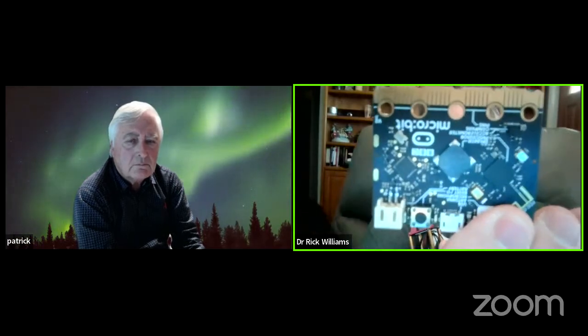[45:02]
Look, you see the CPU here. Yep. You see, it's a Xiao, Japanese. It's 32 bits with an IMU, and now they have a microphone and so on. And this is a micro:bit. The whole CPU, everything is in here. It has BLE. It has a screen. You can actually even program this wirelessly through BLE. It has the gyroscopics on it, all built in. It's an amazing little processor, and this thing will run all day on 3 volts.
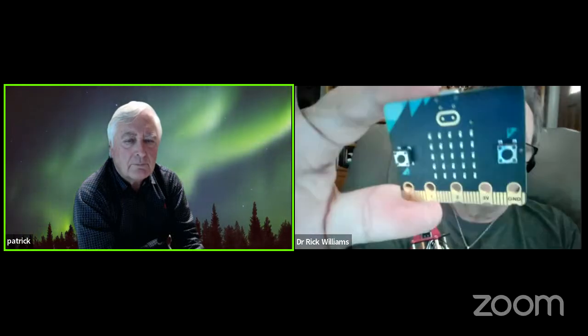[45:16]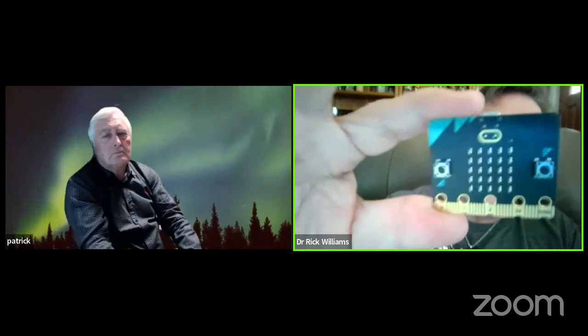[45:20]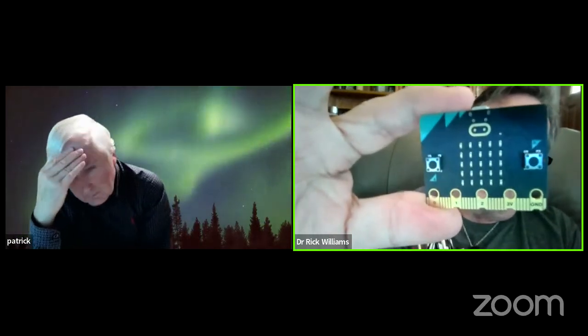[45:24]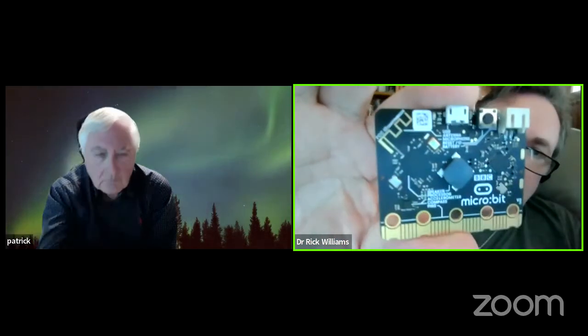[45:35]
And you program in Python? Yeah. Or some people use blocks, but that's the actual screen there. Those guys light up. We use them on all the little robotic things for test. But the beauty of this thing is that you don't have to have hats. You can add to it. But you've got on here a BLE antenna, you've got microphones, you've got video, you've got everything, and it's very inexpensive. So we switched to this because all our other ones used to be Arduino, and we just couldn't deal with the power requirements. So we got away from it because of power mostly.
I mean, you could do anything you want with an Arduino that this would do. Of course you can. But it all comes down at the end of the day to how much power I have to distribute to this individual through the course of a working day, and what I have to do to make that happen. The reason we switched, it was just cheaper, easier. We don't even have to take the board out of the arm to program it when you want to flash it. It all flashes through BLE. Yeah, we do OTA as well with this little chip. Okay. We've got it hooked to our Android phones, so we can do things with the Android phones.
And so what we're doing is we're trying to keep the circuitry as simple as possible to remove fails. So let's just say you want 5 motors. It's really up to you. But if you want 5 motors, you hook up 5 motors. And if there's a finger you don't want to use, it's very simple. You could set up one of the indexes or a simple switch. You turn that finger off, now the other ones work. Very simple, and it's a lot less to go wrong. Or you can set up the index gyroscopics to say, I'm going to make this switch, I'm going to do 3 little things.
That means the third finger doesn't work anymore. Yeah, it's just a matter of how much you want to do programmatically versus with switches. Now, all of these things you and I have discussed can be done a million different ways. However, what it comes down to is reliability, and every component adds another level of reliability issues. I know, something that can go wrong.
These things, I mean, how wet can that get? Probably not very. This thing was being used by a scuba diver, the one I showed you. Really? Yeah, with the electronics. How do you seal that? We basically, the processor was in a sandwich bag.
A sandwich bag with the processor itself. And what we did is, you know those little handheld sealers you can buy? You take a standard sandwich bag, and we had all the stuff in there, and you run this little device. It's got a heat element in it, and it seals the bag. We sealed it around all the wiring and around the processor. Yeah, I know, funny, but it works. And all you have to do is have a method for the tendoning. And the hand that I showed you with the chain fingers is indestructible.
Yeah, I really like the idea because for our hand, we have invented what we call the Flexibone. We have a sort of skeleton which goes from the palm down to the end of the finger in one piece, which is better than the former creation from the Kwawu hand. The Kwawu hand, we've built a lot of those.
One of the biggest things we don't like about it, of course, is where the fingers connect. So the very first thing we do is we take this all off. I like the way it builds the hand. I like that it has that look and feel, the Kwawu. However, the way the fingers connect is ridiculous. They're going to pull right out of the unit. We changed that since the very beginning. So the first thing we do is we replace all of this, and we put the fingers in, and they're connected with bolts. And the beauty of that is we can take those fingers and put them right in the Kwawu hand, and it works.
My issue with the Kwawu hand for the time being is the position of the thumb. The thumb is not in the right place. It is not in position with the index, it is on the side, and there's no swivel. So that's why your hand is also interesting, with the swivel of the thumb.
Our point with the Kwawu or any of the hands that e-NABLE makes is we're trying to make the fingers fit. Any of the e-NABLE hands, we want to give people a path to where if they don't want the existing finger technology and they need a lot more strength, where they really want to lift poundage, it can attach. So the Kwawu is a nice build. I like the Kwawu cuff the most. Version 3 of the Kwawu now has a really nice wrist. It's a push button index wrist. It's very, very nice, much nicer than version 2.
But the Kwawu is made for people without a palm. In our case, we want to build a prosthetic for people with a palm. If people have no hand, it's better, but we want to work with a palm. I understand, and that's a lot more complicated. But this is the goal, and our goal is similar, because we want to do it just for when people have a partial hand.
That's our focus. If you want to see what we've done, we have a website which is partially in English, and we also use students to help us. So I'll give you the website and my email, and I would like to get your direct email, just because I'm sure we have things where we can learn from you. Everyone can learn from everybody, that's the whole point. I'm trying to find my chat. Here it is. I'm going to go ahead and send you mine.
Oh, I've been to your site. Yes, I've been to your site. You've been? Yeah. Okay.
So we try. I recognize that hand. This one is not yet on the website. This one is the last one. It is not yet on the website because I am quite lazy to write. It's a long job to write what we've done, and so on.
I think the whole point of this discussion is there's no one way to do anything. The point people need to accept is we need to make a way to take these good ideas that people have and find a way to make them fit all the different products that e-NABLE has, so everyone can take advantage of it depending upon what type of injury they have.
I'm not using Facebook. I'm 100% against Facebook. Don't you have an email? No, it's awful for me. Facebook may be very interesting, but that's all right. It's so much used by crazy people that, Mr. Zuckerberg, I don't want to do anything with it.
How about that? I'll just give you my e-NABLE email. Yes, well, okay, Rick. Voilà. You see, I'm Patrick at e-NABLE, and you are Rick at the. Yeah, I've been to your site.
You guys were originally making some interesting mods to the Kwawu a while back. I know you changed the wrist around a lot, and you did some really nice stuff. And we are doing what the customer needs right now. Exactly. We are doing few hands and a lot of very special tools dedicated to skiing. We have a lot of little boys and girls who want to go skiing without one hand and so on. So we have a lot of job in that part.
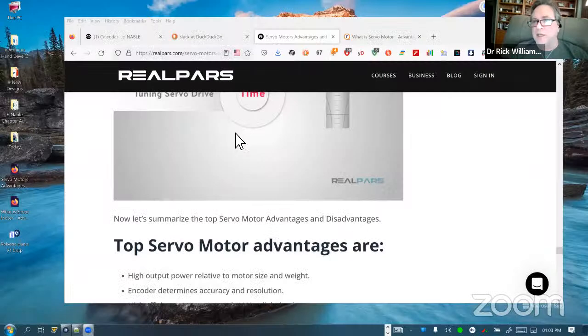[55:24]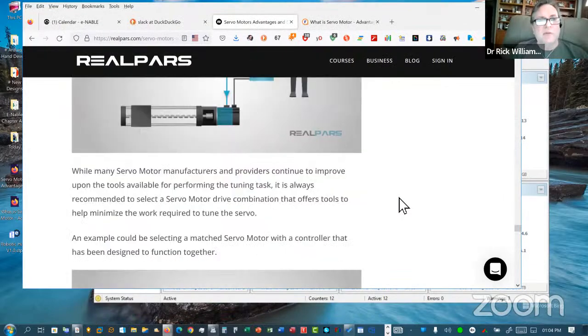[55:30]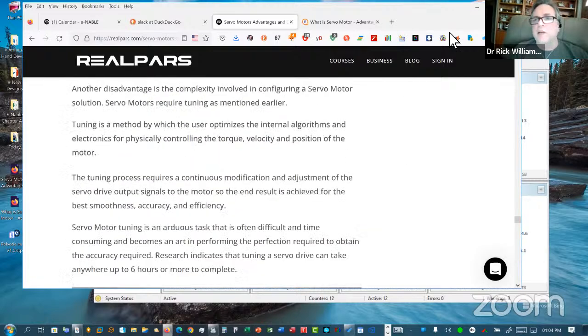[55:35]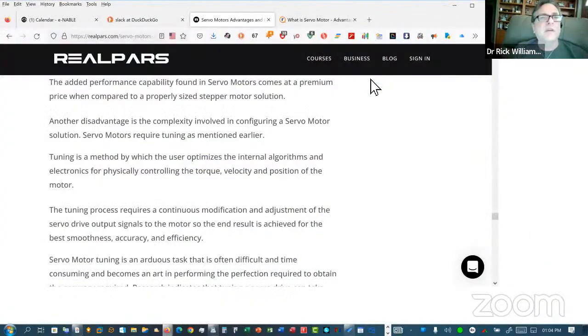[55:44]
I understand. If you don't mind, I see we just got Jeremy here, and I want to make sure I share my screen again, because I want Jeremy to see this. Jeremy, this is what we showed earlier. This document from RealPars is really a worthwhile read. And also, I have another one here, and I don't know that we got to this one or not. Oops, now I've done it. This thing is in my way and I can't see.
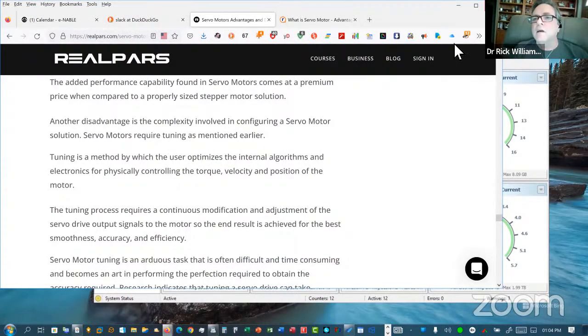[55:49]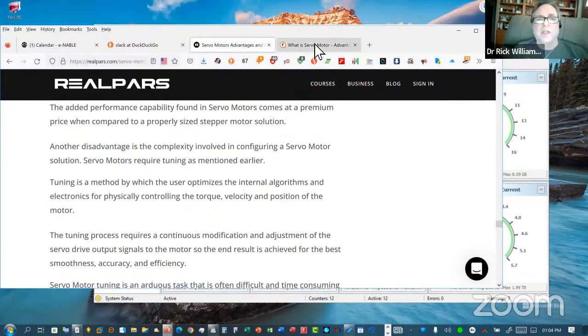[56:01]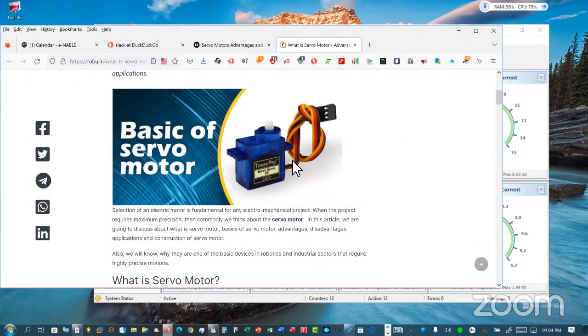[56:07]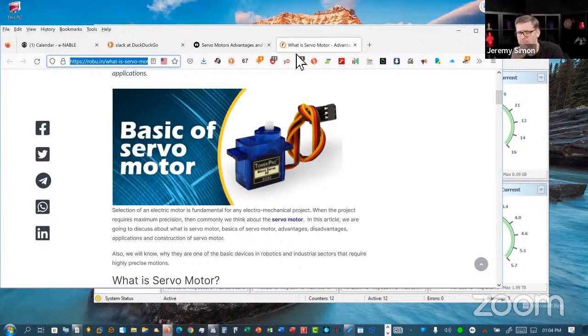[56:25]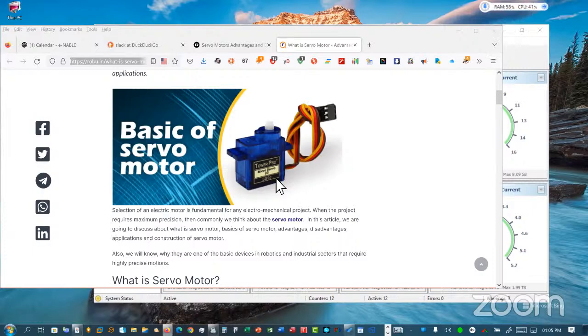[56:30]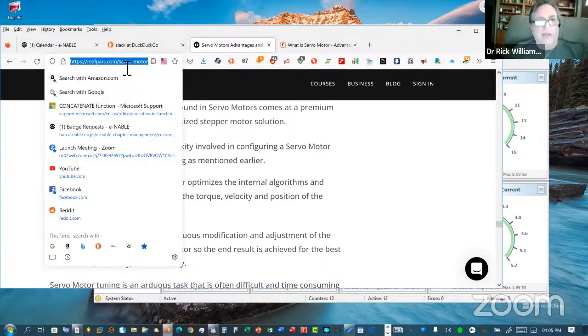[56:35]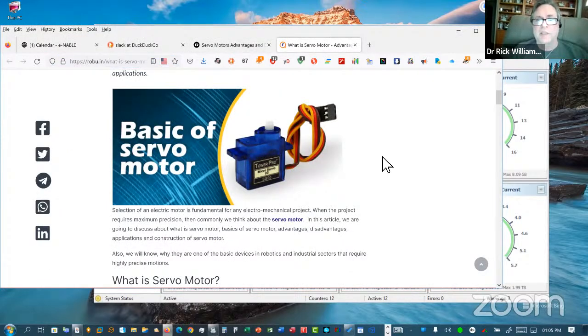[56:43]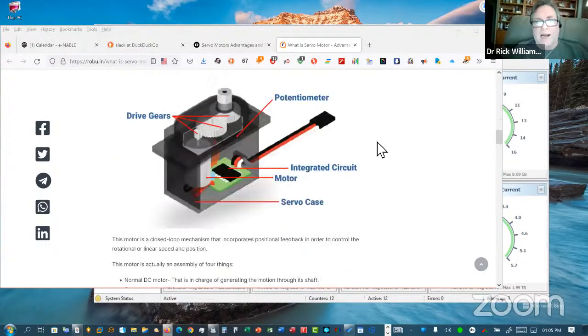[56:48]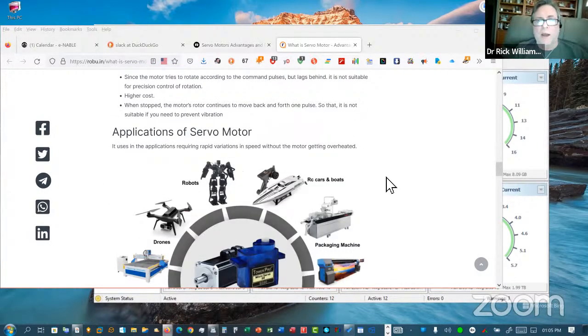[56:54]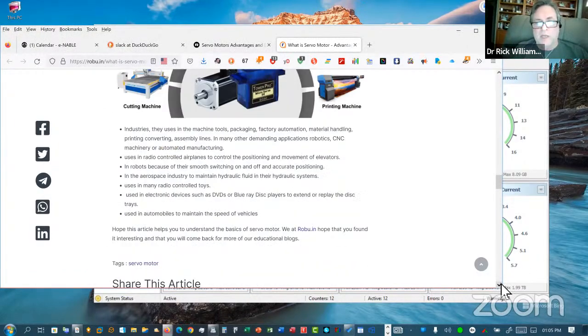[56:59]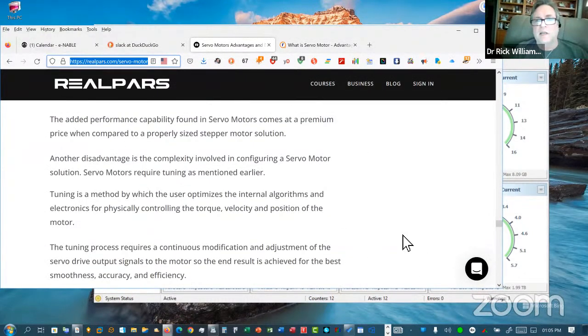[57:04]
This has been a great hour, and if you all want to keep talking, I can pass hosting over to someone. I wouldn't mind if you want to keep going. But what I wanted to make sure is that you guys just knew about these sites and that you had access to them, because it really goes through, on a really nice, simplistic level, what each of the different kinds do and why you would use one versus another. I looked around last night, and these are probably some of the best things I found. This one here, the RealPars guys, I think they just did it.
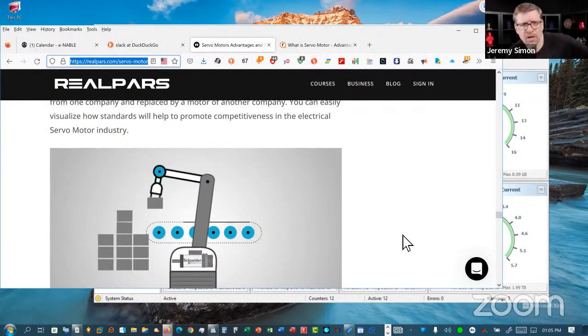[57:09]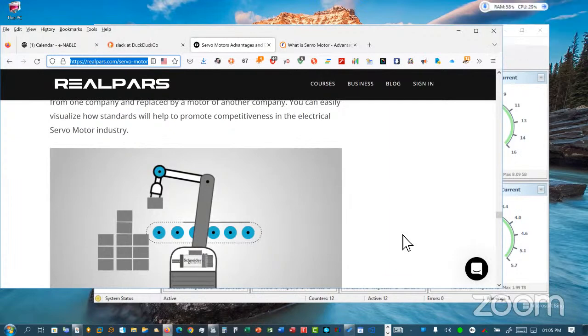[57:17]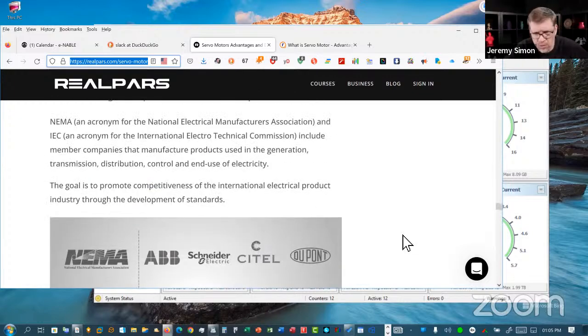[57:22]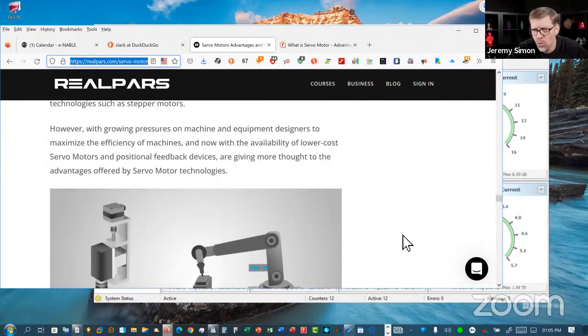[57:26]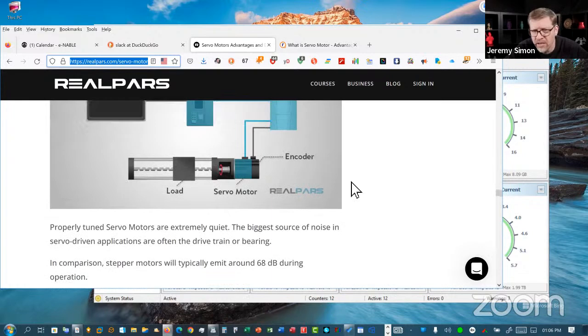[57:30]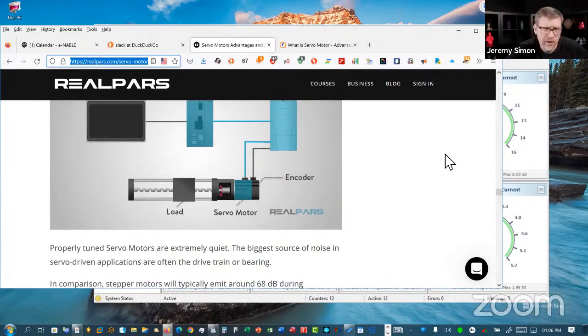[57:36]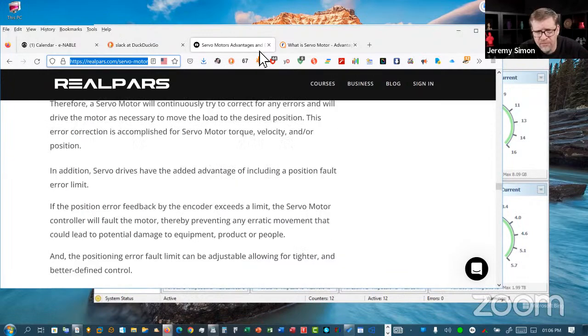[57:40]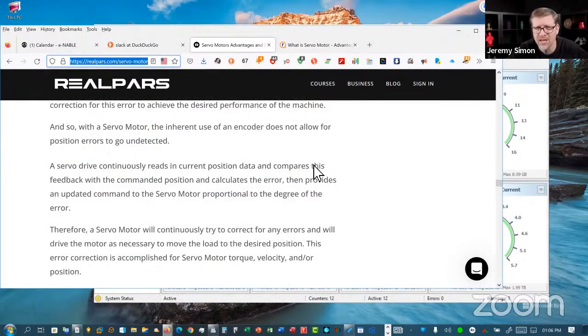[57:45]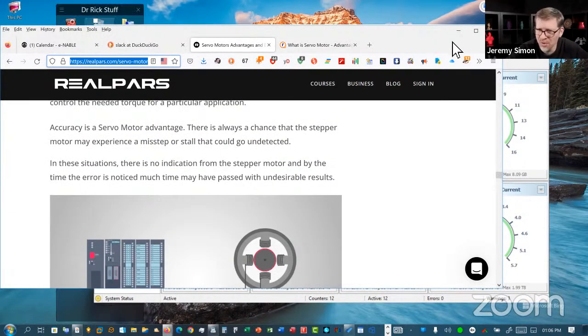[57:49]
Rick, I wanted to apologize because I had this on my calendar as 1 p.m. Eastern, and so I thought I was joining at the beginning of the meeting. I guess it shifted back an hour. Oh no, it's all right. I'll have to go check the recording. Patrick and I have been having a lot of fun. Okay, great. I'll look at the recording. I'm sure there's a lot of good info, but if you guys want to continue, you're welcome to. Since I'm at the tail end here, I think I'm going to drop back out because I want to see the whole thing from the beginning. So I'll go watch the recording.
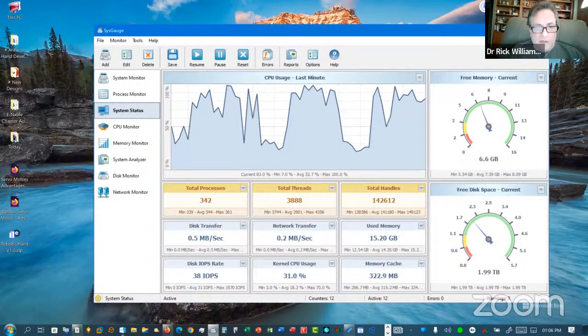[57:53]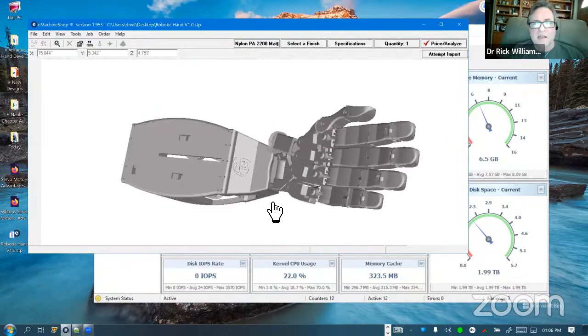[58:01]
Patrick, let's see. Hold on. Do you want to continue, or have you had about enough of me today? Oh, I have plenty of time.